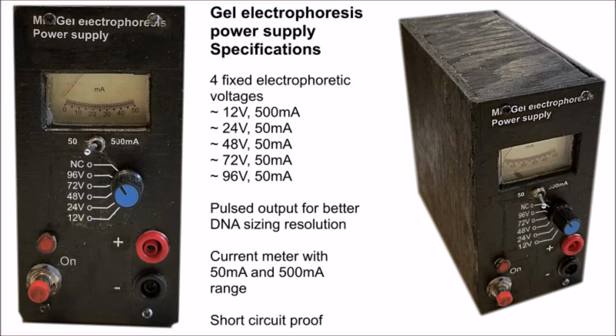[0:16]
Decided to build a simple electrophoresis power supply using electrical components instead of electronic. Kind of a new first for me. Just go over the specs pretty quick. Turned out to be quite useful. So it gives me four voltages from 12 to 96 volts, at around 50 milliamps, except for 12 volt, which is around half an amp. It's current limited, short circuit proof, and I stuck a beautiful little meter, so it looks pretty sexy.
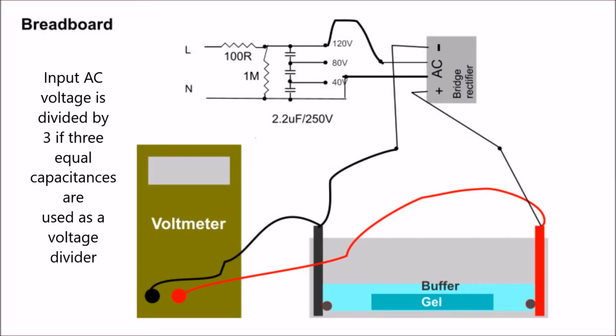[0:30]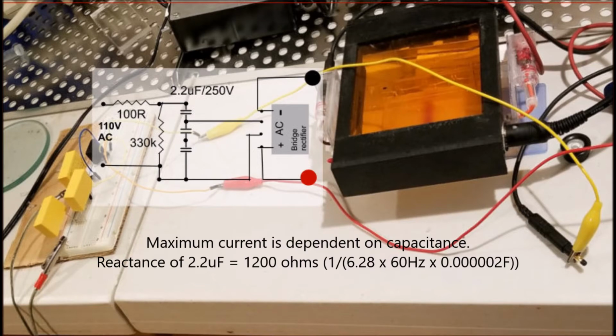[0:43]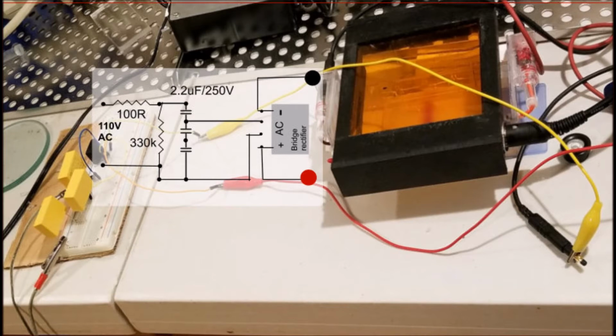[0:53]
The concept is actually quite simple. What happens is if you input an AC voltage, let's say 120 volts, across three capacitors of equal value, you break the voltage down into 40, 80, 120 volts. So I set this test thing in a voltmeter across a gel unit, and you can see the maximum current is essentially dependent on the capacitance. So 2.2 microfarad gives me approximately around 40 milliamperes.
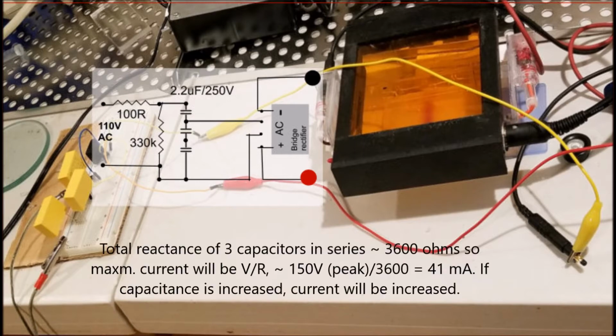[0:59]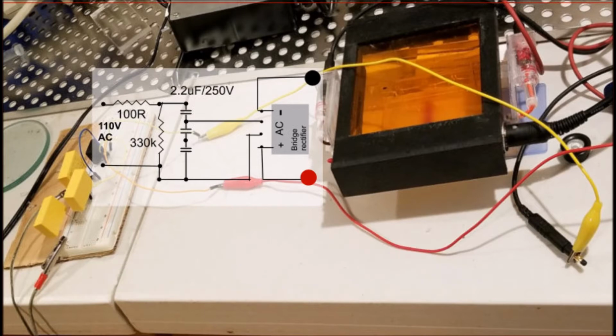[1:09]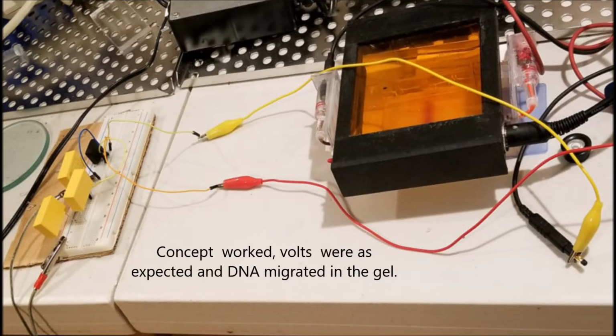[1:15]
So it worked, it pushed the DNA through the gel, and you can see on the breadboard on the left the three capacitors. So like I said before, the 41 milliampere thing would give me that. I thought I could increase the capacitance and potentially increase the current. So the concept quite surprisingly worked quite reliably. So then decided to kind of go ahead with a circuit.
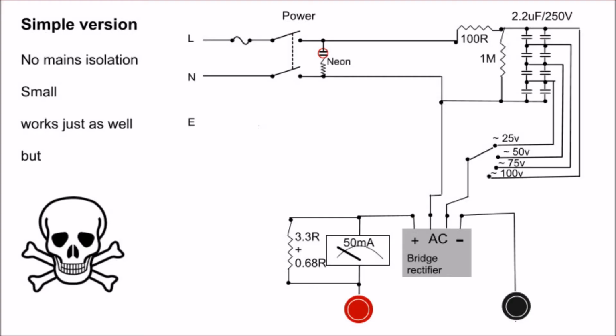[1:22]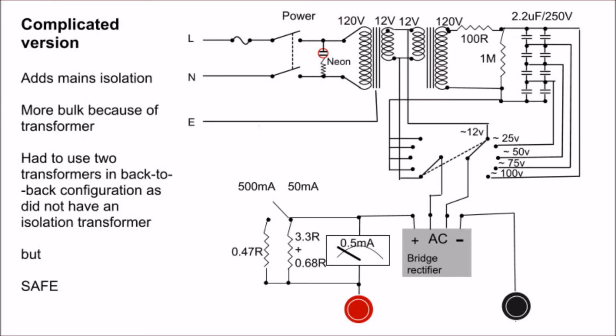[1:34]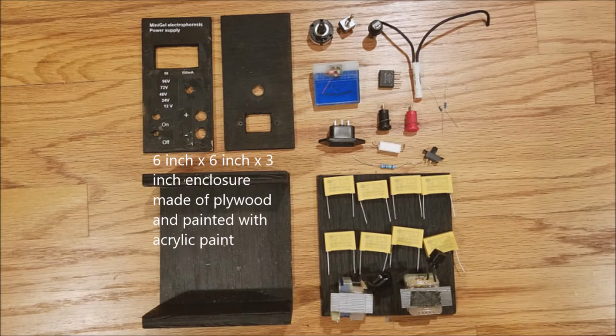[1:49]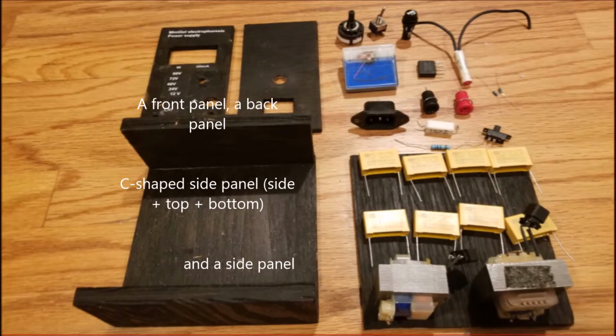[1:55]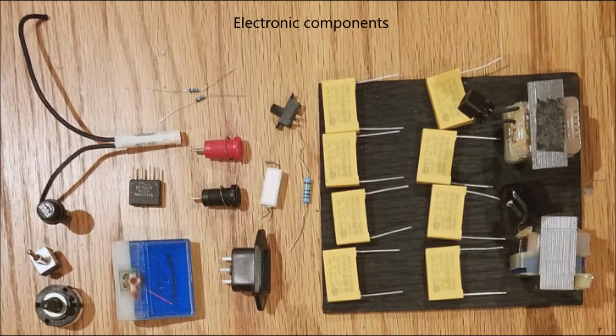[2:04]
So, okay, at the concept down, so I gathered the parts together, built a wooden enclosure, 6 by 6 by 3 inches, made of plywood, painted with acrylic. The enclosure is essentially a C-shaped side panel, a front panel, a back panel, and another side panel, which you can see here. The so-called electronics / electric components are all shown here.
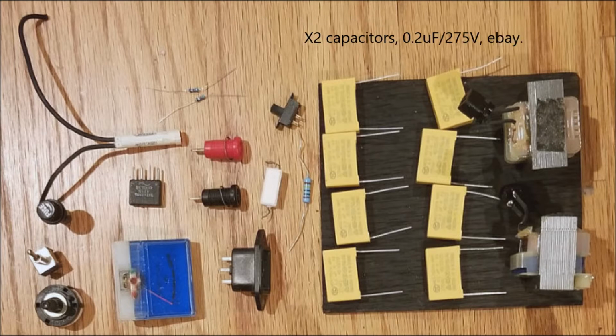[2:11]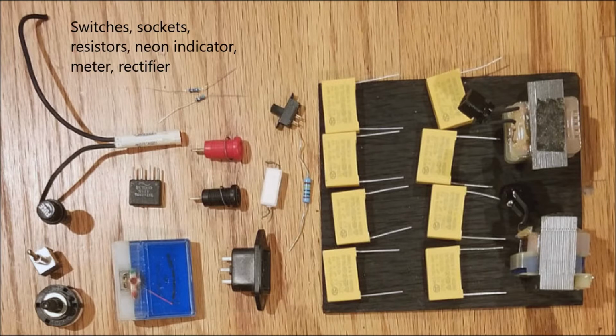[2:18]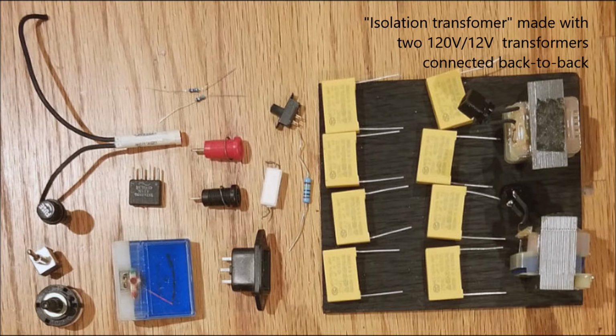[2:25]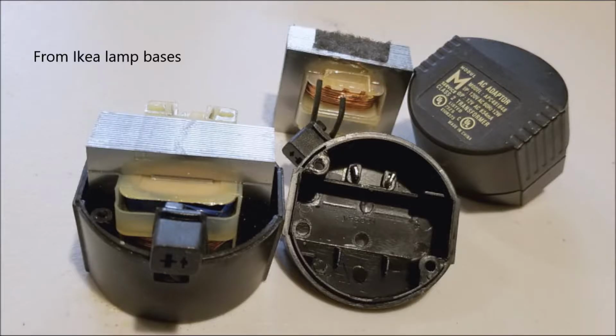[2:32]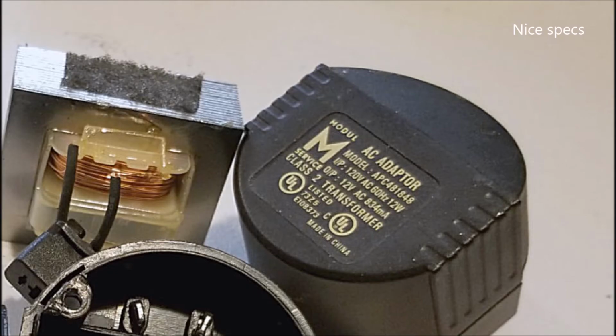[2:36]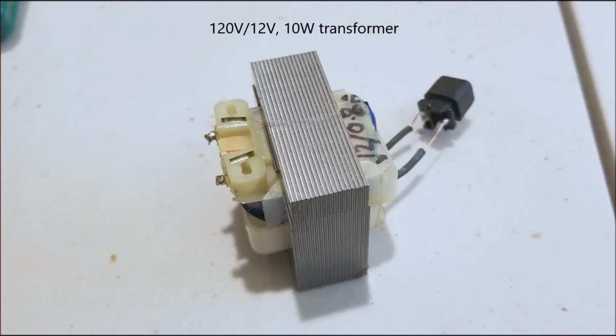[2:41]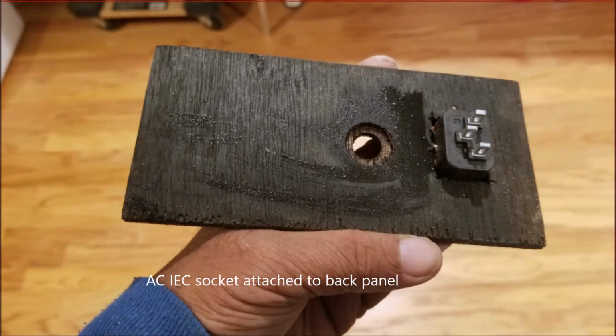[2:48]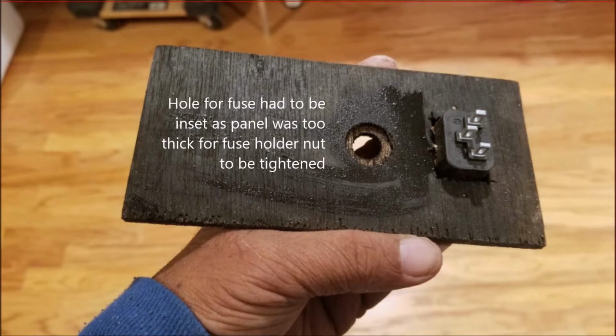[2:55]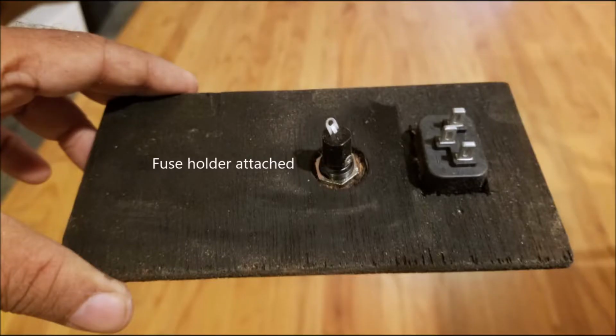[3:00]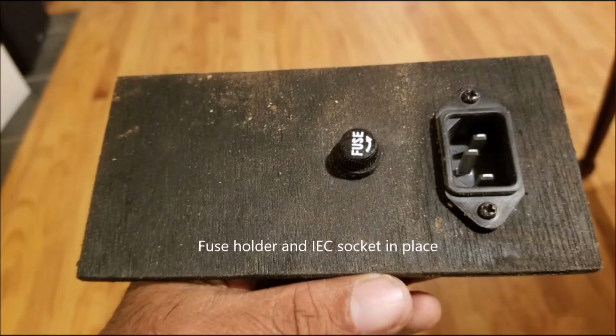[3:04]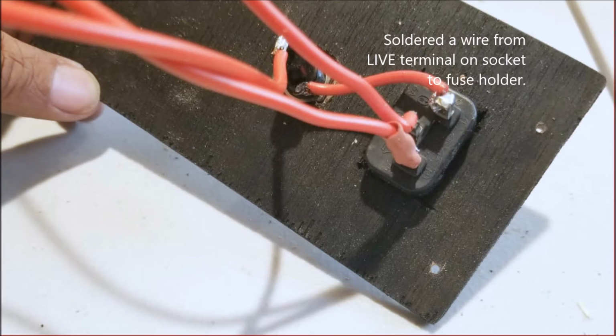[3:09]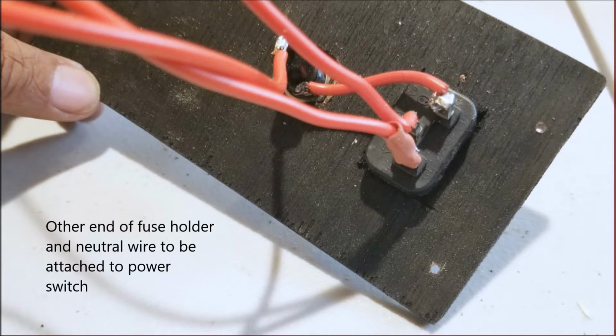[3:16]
So now I had the parts together, decided to stuff the back panel, which is just two components, the IEC socket and a fuse holder. I had to insert the hole for the fuse holder because otherwise I could not attach the screw, which you can just see here. Once I had these components in, the IEC socket and the fuse holder, I wired it in with around 6-inch lead wires. So the fuse will go to the power switch. The neutral, which is the bottom, will go to the power switch, and the live is connected to the fuse.
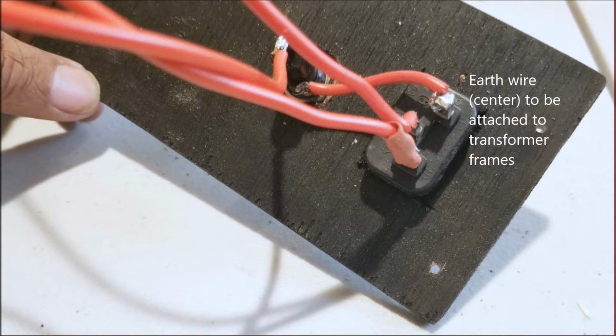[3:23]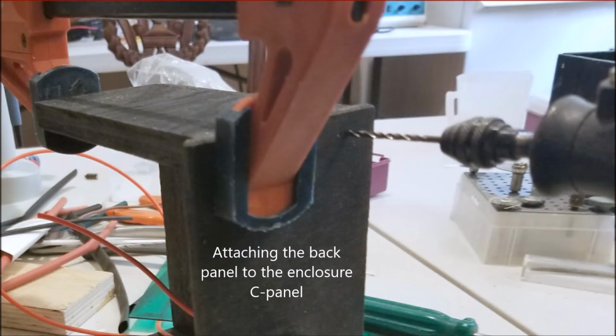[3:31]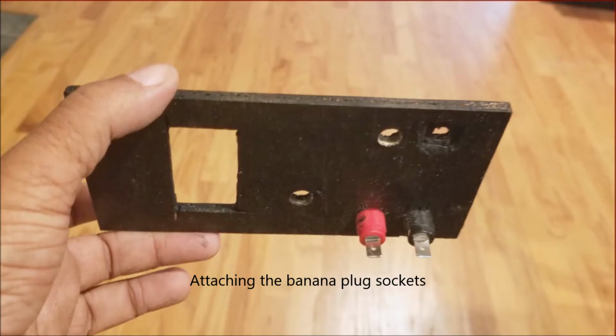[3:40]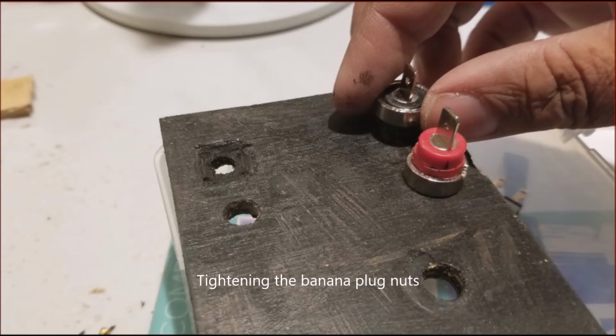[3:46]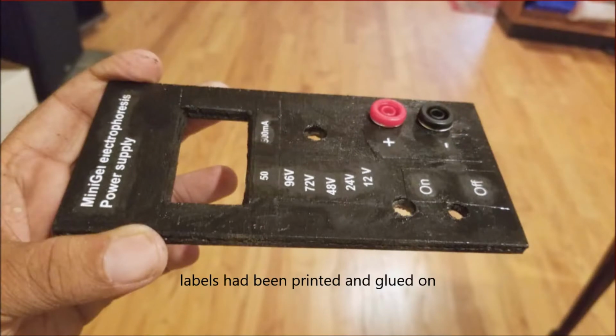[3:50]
Simple wiring here. Once this was done, I also had an earth wire. Sorry, I forgot to mention that it's coming up from the middle. This would be attached to the transformer frames to kind of provide a good grounding. I attached the back panel to the C part of the enclosure, and now it was time to move on to the front panel. So this had banana plugs, which would output the voltage for electrophoresis, which I attached, hand tightened, and just a little bit of pressure. So this was held well.
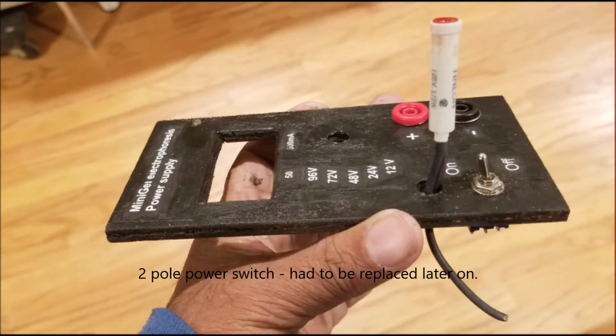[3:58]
I had applied the labels and printed it on, but then moved on to the power switch. Again, this needed a bit of an inset, so the power switch would fit.
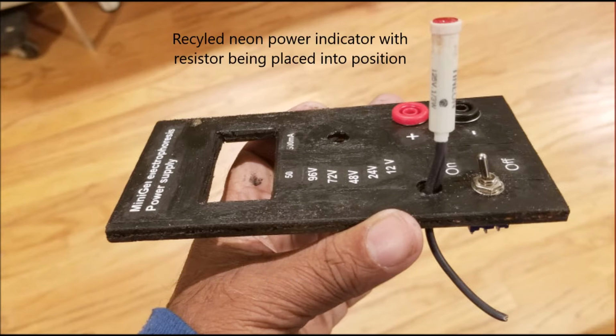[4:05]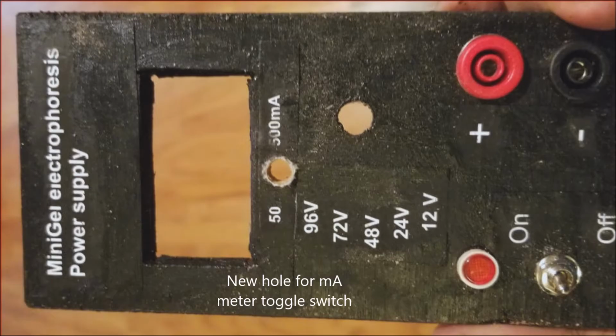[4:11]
And this was a problematic power switch that I'll talk about later. Then I had a recycled neon power indicator, which did have a resistor inside its body. So I put that in. Again, remember retro. I had to drill a new hole for mA meter switch.
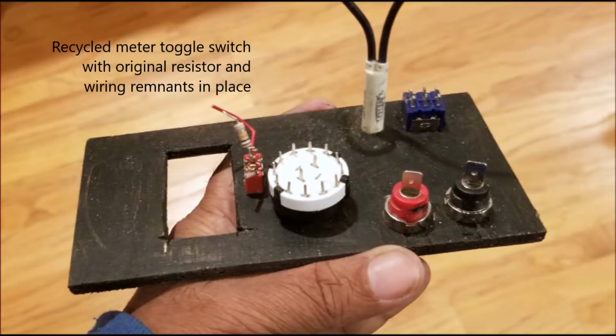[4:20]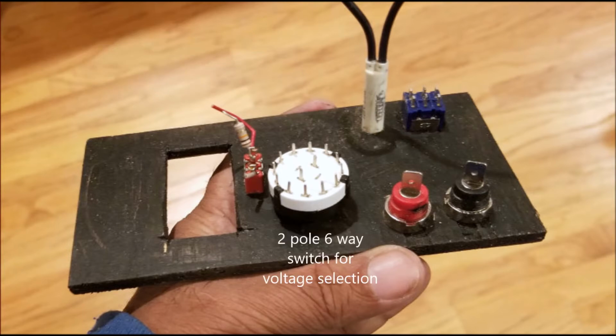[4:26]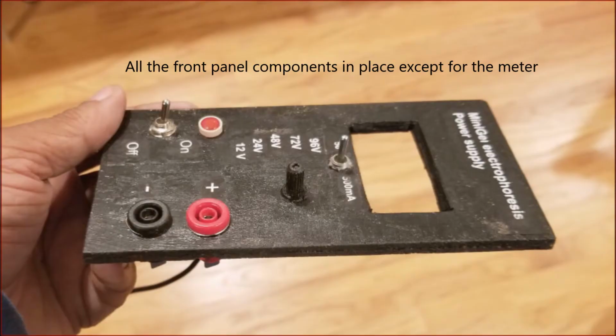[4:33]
I could switch to two currents, 50 and 500. And you can see that here. Again, an old recycled switch with its old wiring and resistor there. Finally, the voltage selection switch, which was a two-pole six-way. And I think I used five of the six positions. You can see it's all kind of nicely, neatly in place.
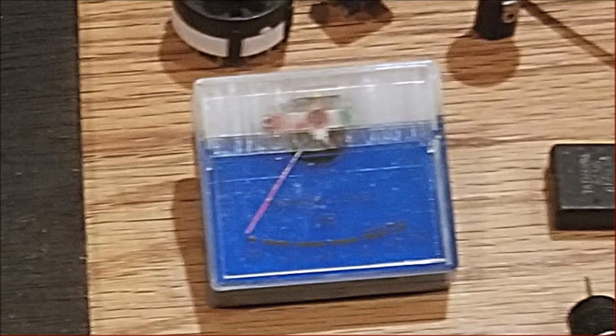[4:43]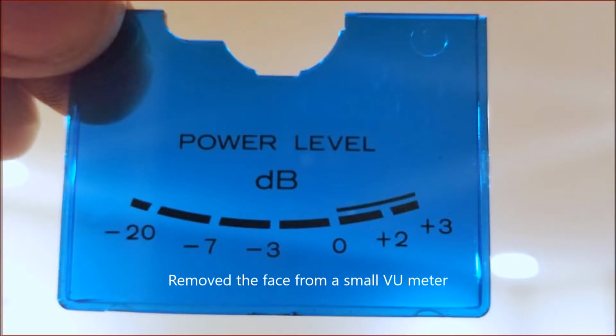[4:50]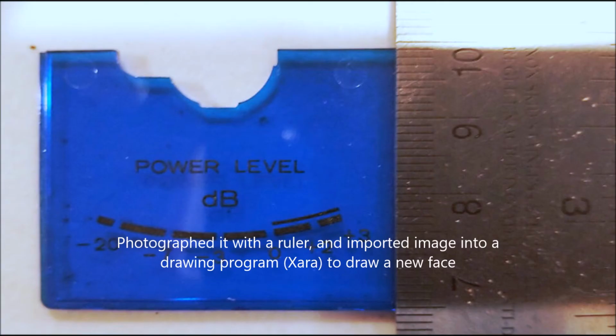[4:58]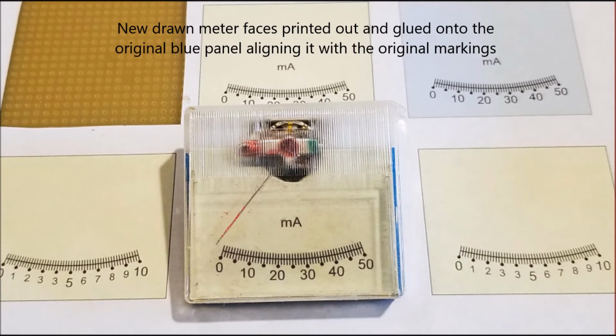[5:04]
Then it was time to move on to the milliamp meter. That's a big hunk, so I thought I would get that out of the way. I had old VU meters, so I thought I would remove the blue meter face that you see there. And I took a photograph of the meter face with a ruler next to it, imported it into a drawing program and scaled it to the right size, a ruler helped, and then drew the face on top of it, printed it out, glued it to the blue face, and you can see here the finished product. So 0 to 50 milliamperes.
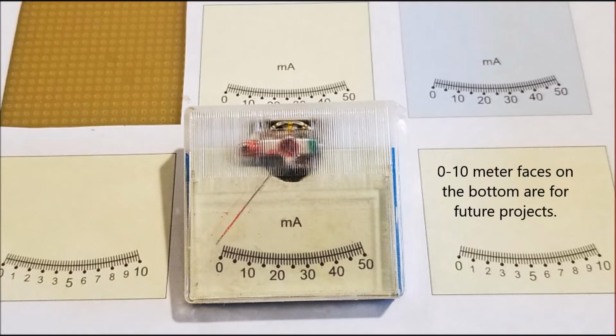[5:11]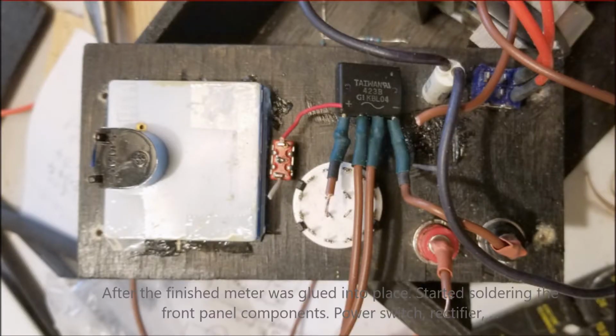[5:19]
The other faces you see in the background, the 0 to 10 and all of them, are for future projects, so just keep tuned in for that. It worked out well. I'm surprised how cute the meter looks. I glued the meters in, and you can see the meter switch just below it in the red, and the rectifier had already kind of been pre-wired.
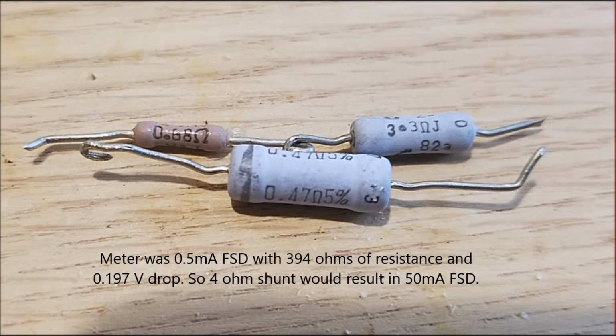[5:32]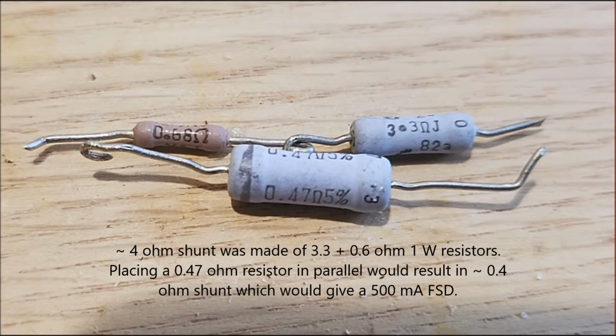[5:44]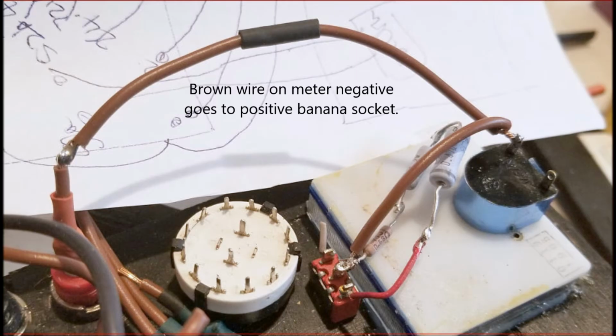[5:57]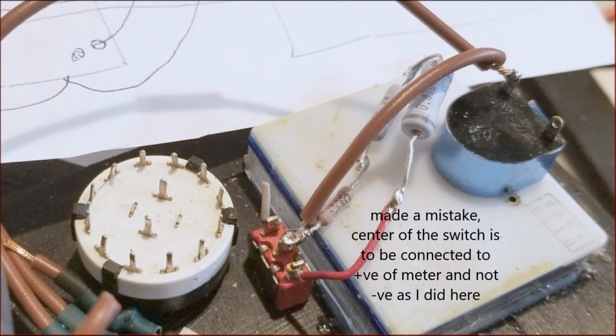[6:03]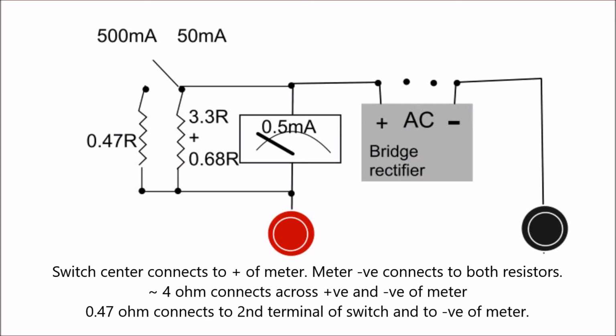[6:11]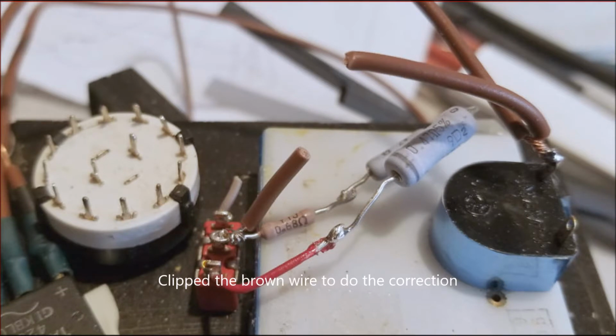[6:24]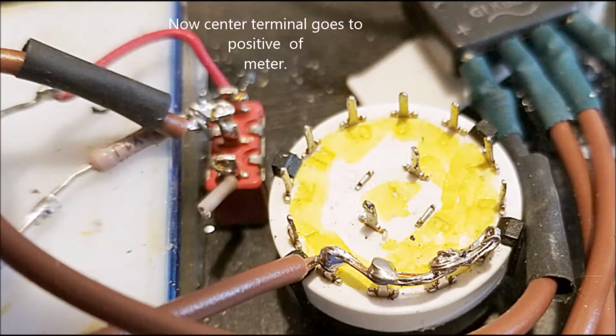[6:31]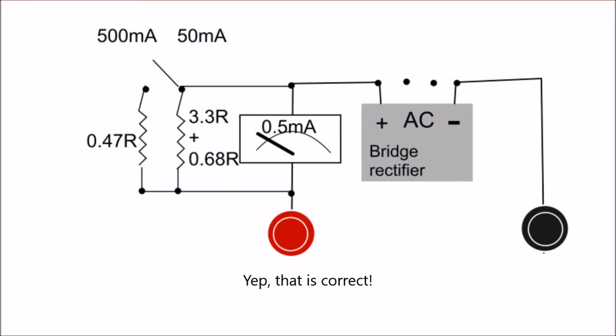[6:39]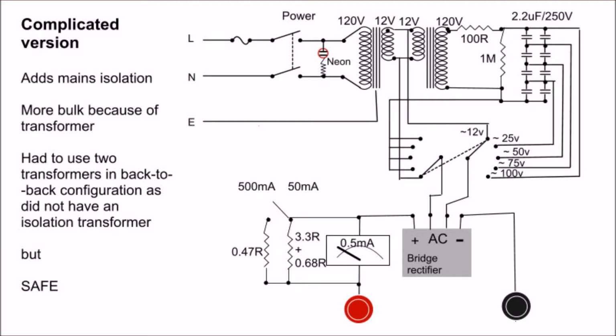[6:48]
So I had to trim this wire, and then clip the correct wires to the right place. And here, sorry, it's a little off skew, but the correct wiring has been done. So the center now goes to the positive of the terminal, like shown here. So the top of the meter, the positive, goes to the bridge rectifier and the center of the switch. And now I had to move on to the voltage selector switch.
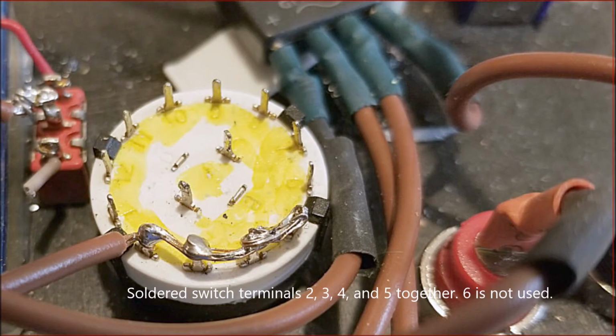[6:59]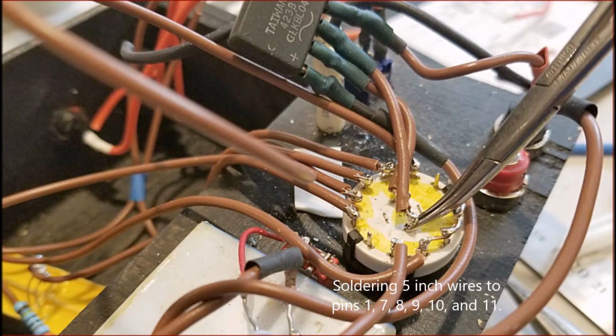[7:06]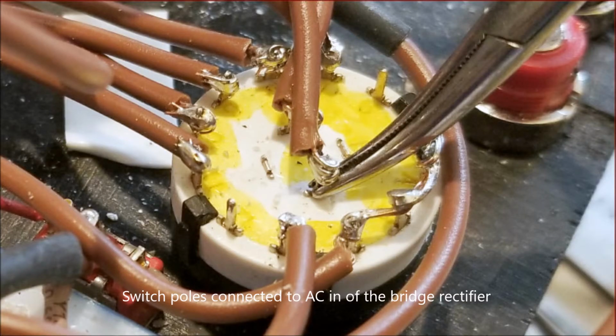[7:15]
So this is the circuit again, and you can see there are two sides of the switch, one and two. The right are connected to the capacitor bank and the left all in one. So the left is the switch I started with. So I connected terminals, I think 1 to 5, all together, and then just attached brown wires around 5 or 6 inches long to the other terminals based on that circuit diagram that I showed you before. A close up. So I used a kind of pinch clamp as a heat sink because this was a fragile plastic switch. I was afraid of melting the plastic.
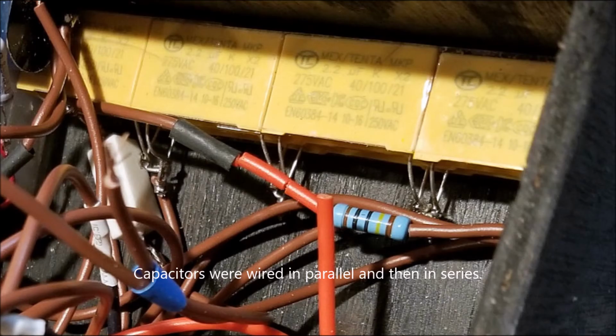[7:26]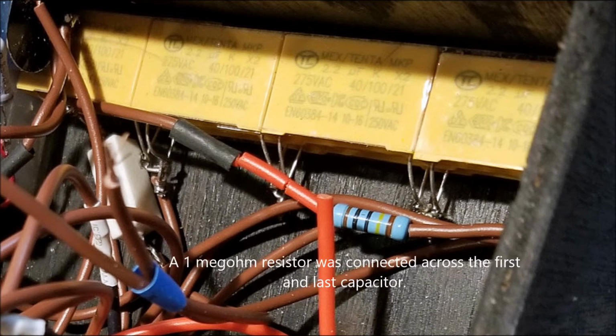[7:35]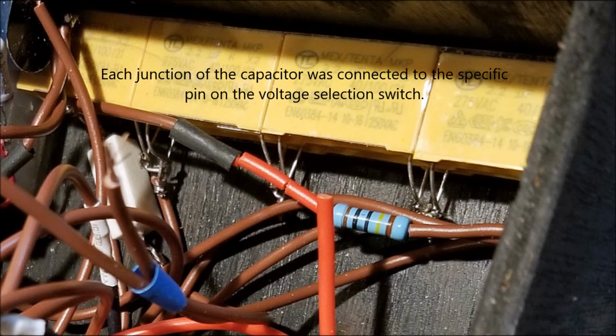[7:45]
Now it's time to move on to the capacitors and the transformers. So the capacitors from eBay, they're a stack of two, and plus four in this way, so in parallel and then in series. So I put a 1 megohm resistor from the top lead to the last lead of the capacitor. This would help drain the capacitor when power was shut off.
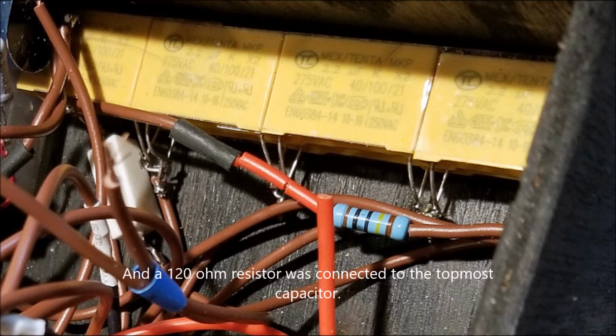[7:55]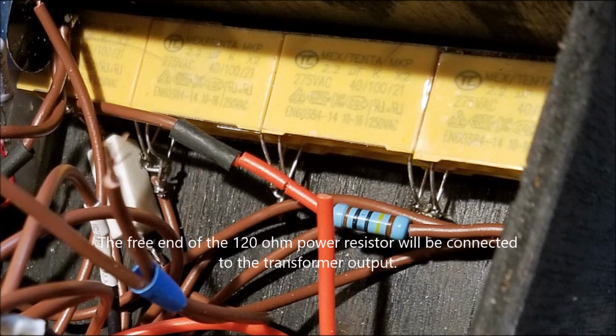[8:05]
And each junction of the capacitor was connected to a specific pin on the voltage selection switch that I'd pre-wired in the previous section. Once this was done, I glued the capacitor down, and then I attached a 120 ohm resistor to the topmost capacitor. This would be fed by 120 volts from the transformer.
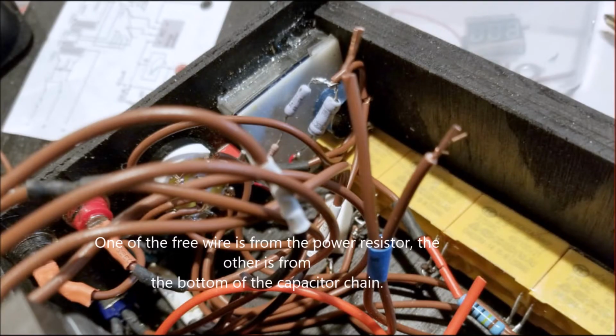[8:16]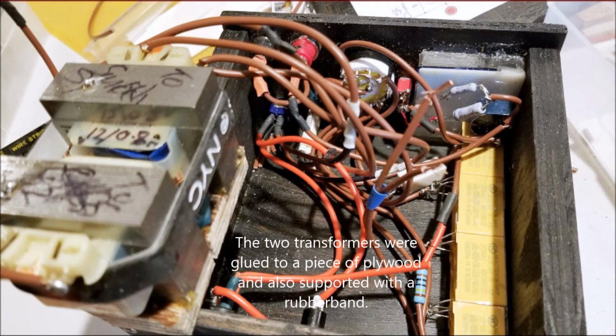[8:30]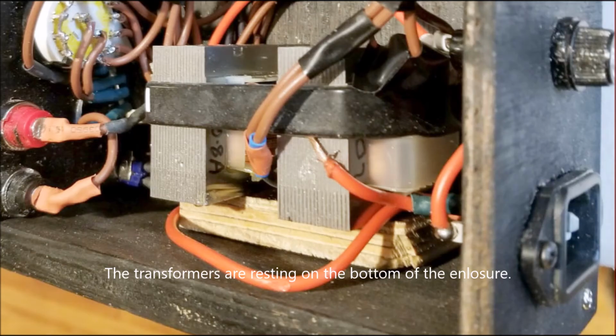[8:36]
Now, of the free wires, the two wires that you see in the frame, one is from the power resistor, another is on the bottom of the capacitor. Connecting the transformers was actually kind of a big headache. So just to immobilize the transformers, I glued them to a little piece of plywood and rubber banded it together so they wouldn't slide around like crazy.
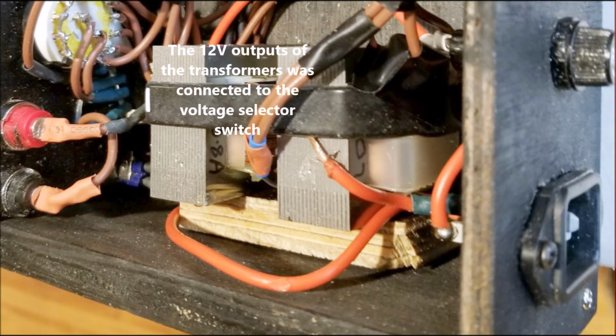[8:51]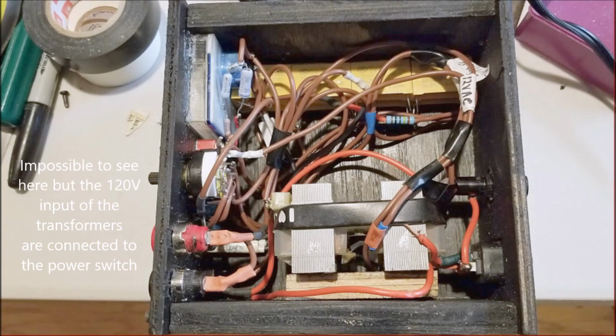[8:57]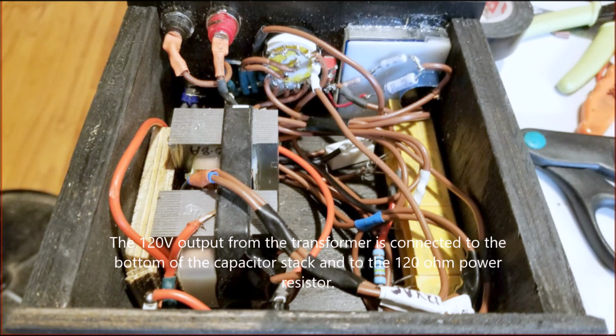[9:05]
Here I placed the transformers on the bottom of the enclosure. You can just about see the earth wire coming to the center of one of the transformers. It goes all the way to the second transformer. It was soldered and then covered. The 12 volt output, which are the two wires in the middle, will be connected to the voltage selector switch. It's pretty impossible to see it in all the mess here, but I followed the circuit diagram quite accurately.
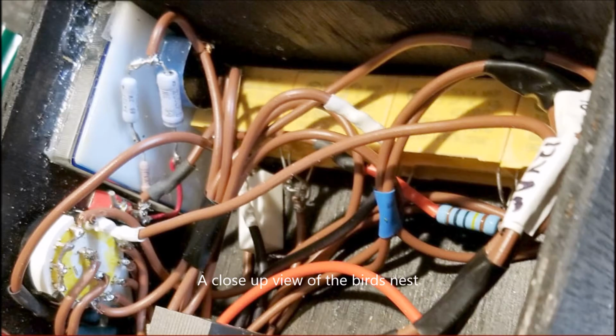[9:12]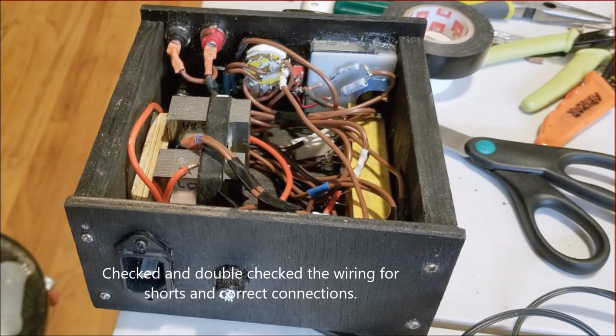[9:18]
The 120 volt output, which is on the bottom of this picture, was connected to the bottom of the capacitor, and you can see the close up here. It's a bird's nest, right? The taping helped clear the mess up a bit. I checked and really double checked the wiring for shorts and correct connections, and fortunately didn't find any major errors.
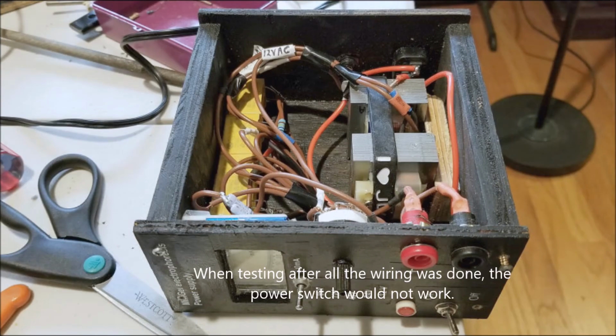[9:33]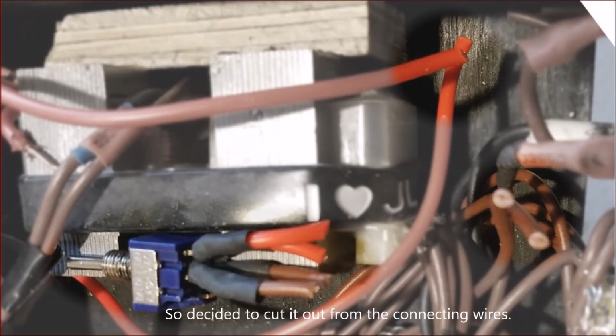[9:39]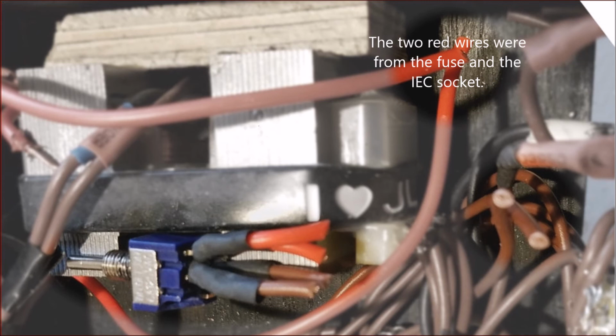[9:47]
The big headache was when I powered it up, I couldn't get power through, and I finally figured out it was a defective switch from eBay which had stopped working. So I had to remove it in spite of all the mess. I removed the front panel, snipped the power switch off, and you can see the red on the top is the wires that come from the fuse and the IEC socket.
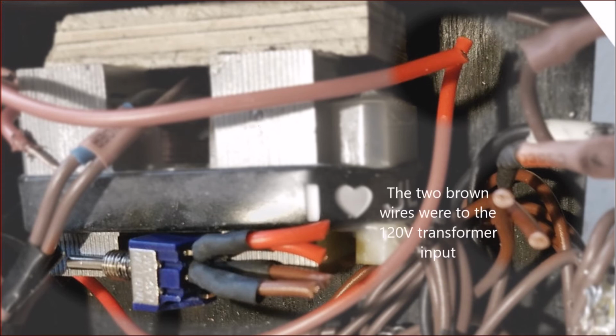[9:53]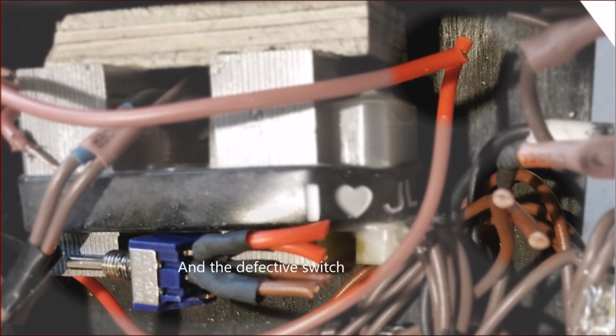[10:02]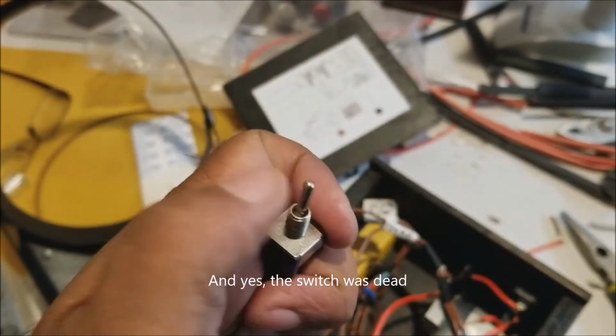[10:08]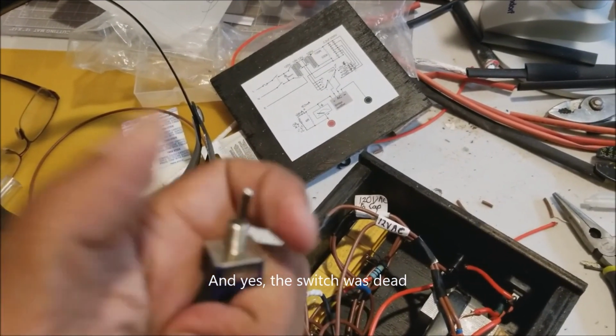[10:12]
This is the AC input, and the brownish wires pointing towards you are from the 120 volt transformer input. So this is what would feed 120 volts to the transformer, and of course the defective switch on the left, which I dumped. I took a quick video, and it got worse when I removed it. I couldn't even flip the toggle on the switch. Either the inside springs or something had gone wrong.
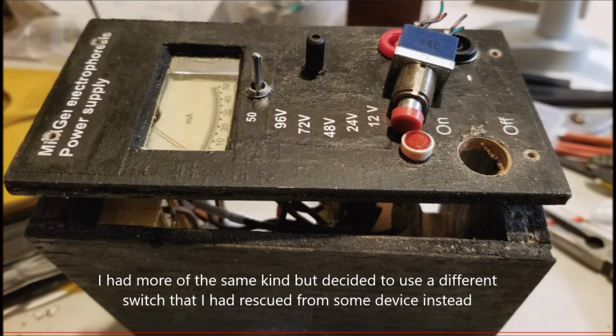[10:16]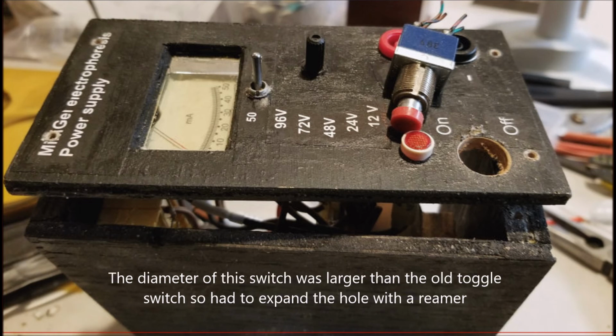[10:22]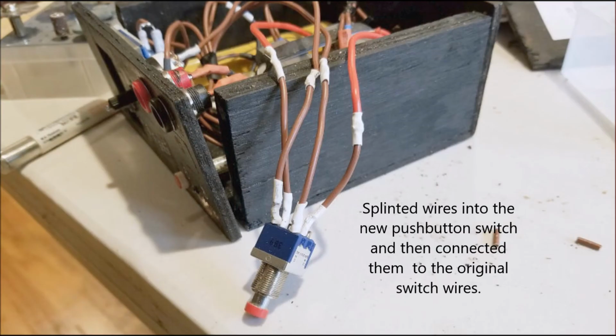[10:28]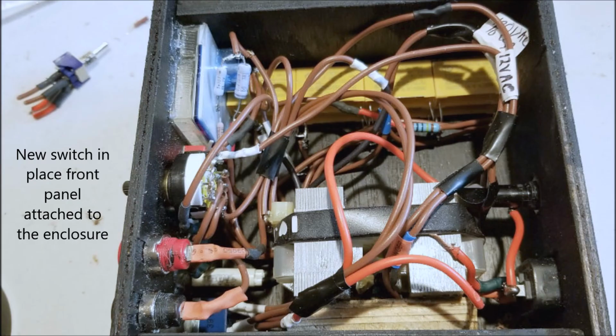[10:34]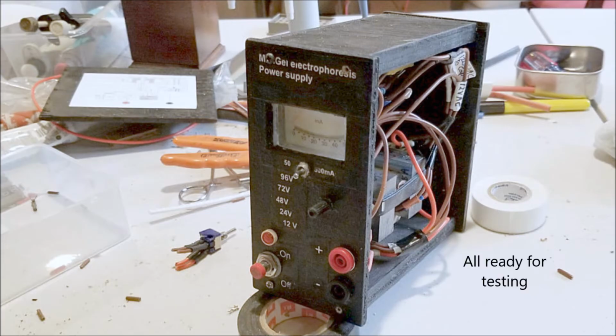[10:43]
I had more of the same kind of switch, but I decided to use something more robust, and this was a push button switch. The diameter of this was larger than the original, so I reamed the hole a bit larger. Then I spliced some wires in and connected them to the original wires of the power switch, put that power switch back into the enclosure, and then put the front panel back on, screwed on here. So now it's ready for testing.
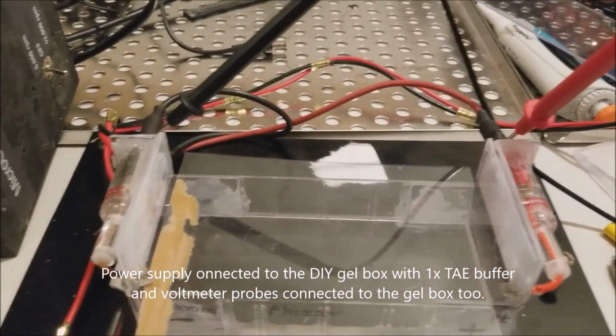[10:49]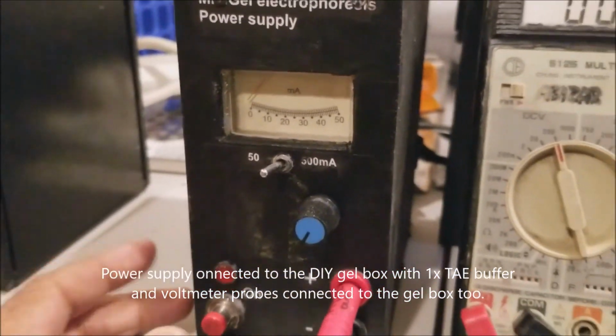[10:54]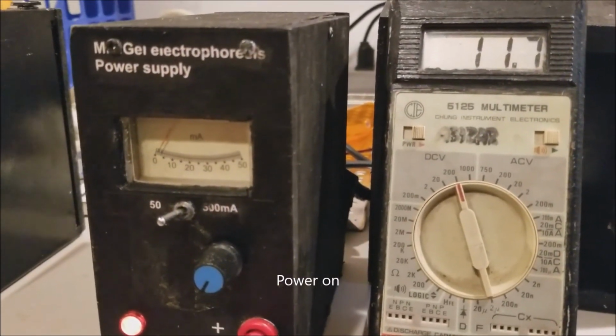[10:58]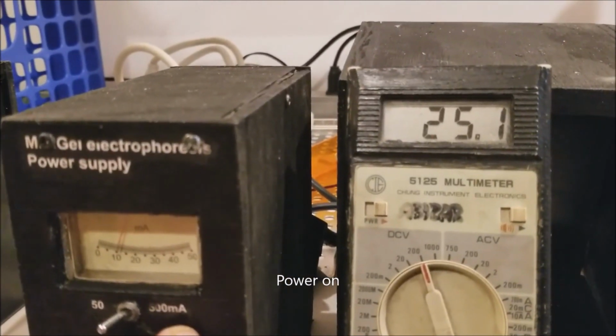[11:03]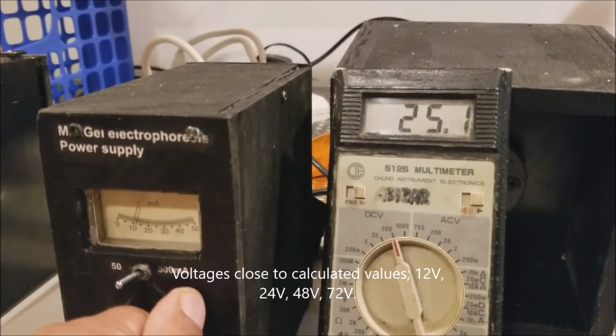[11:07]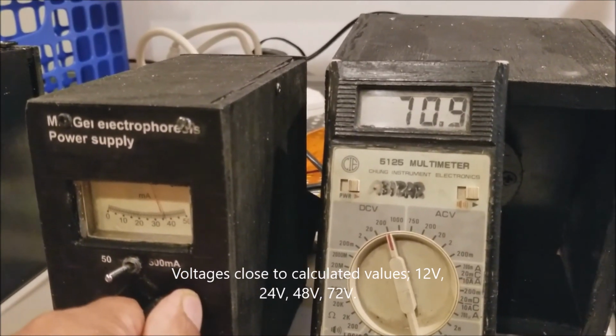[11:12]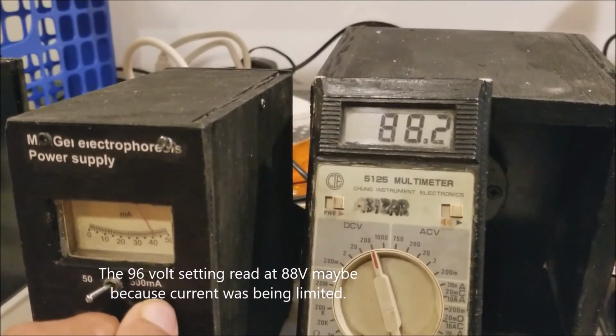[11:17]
It looks kind of decent, and I'm actually surprised how quickly the whole thing went in spite of the power supply. I connected the power supply to my DIY gel box, a separate instructable, with the buffer, turned it on, and you can see the 12 volts there, and at approximately 24 volts, you can see the current increasing, and then it went to 48 and 72 and the so-called 96 volts. I was only getting 88 volts.
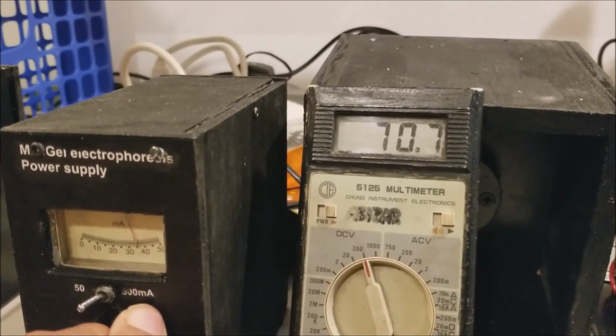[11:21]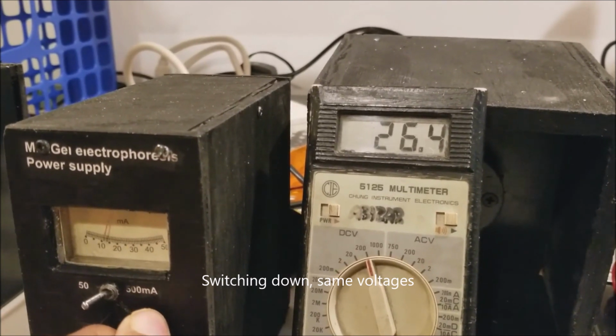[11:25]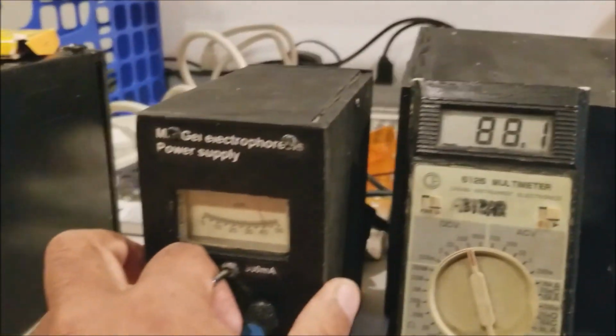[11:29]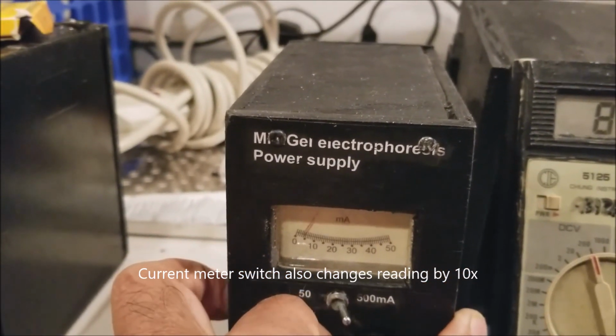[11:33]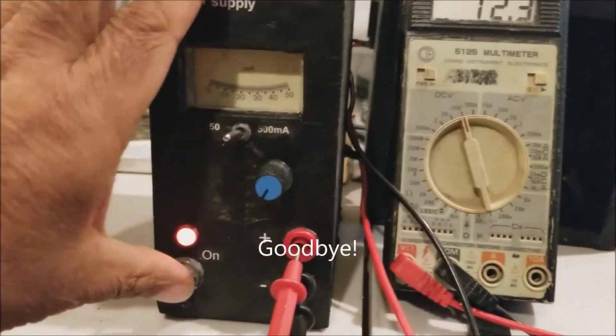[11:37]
Maybe the current was starting to be limited. Then of course I'm flipping the voltages down just to confirm, and the switch and everything is the same as when I went up and down. So it seems to be working quite well. Check the meter switch, and you can see if I switch from one to the other, the milliamp meter goes down by 10x. And that's it, guys.